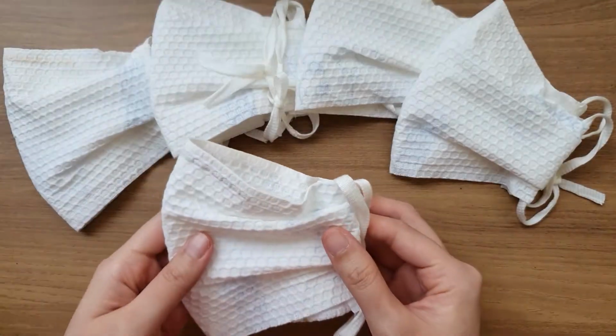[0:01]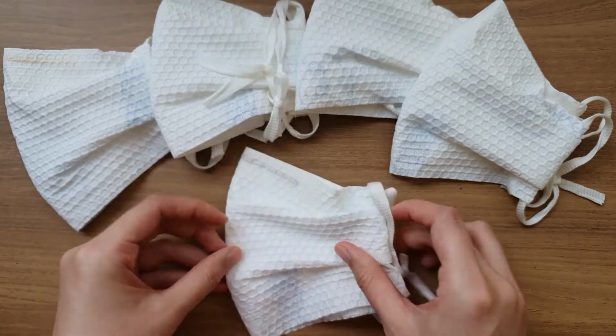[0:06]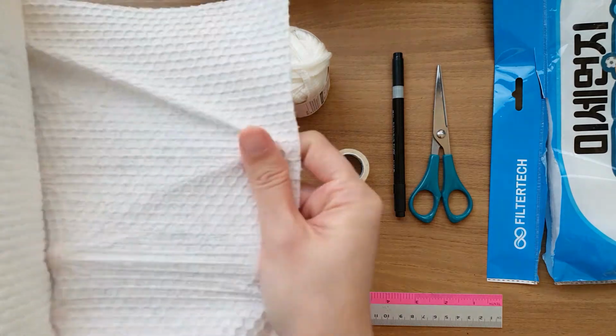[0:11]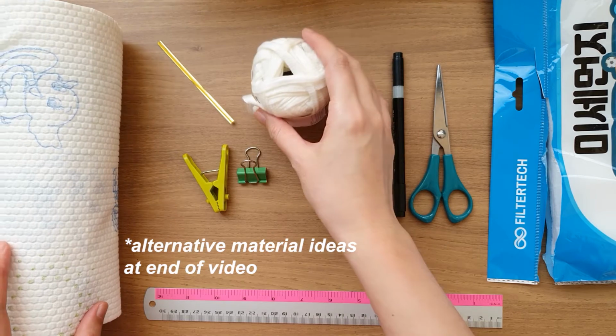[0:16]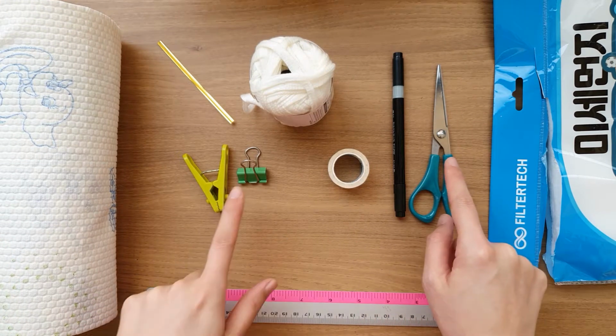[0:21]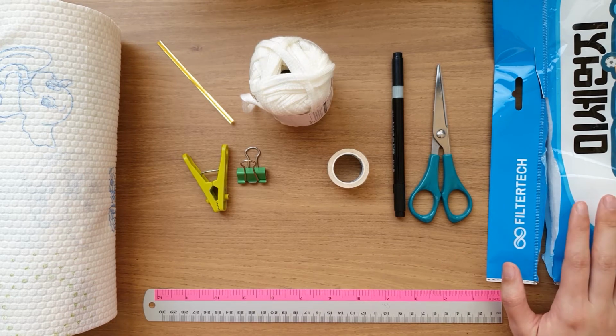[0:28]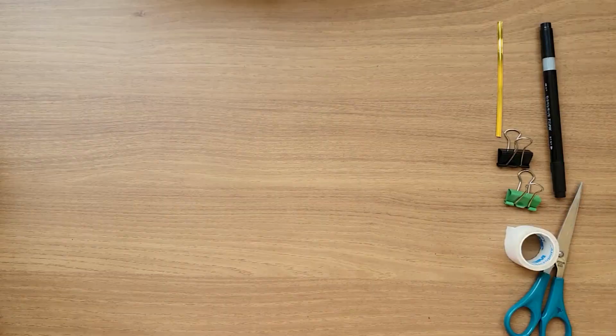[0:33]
This is the easiest DIY disposable mask you can make with basic household items. You will need a durable washable paper towel, twist tie, t-shirt string, medical tape, pen or pencil, scissors, binder clips, a ruler, and your filter. If you can't get a HEPA or HVAC filter, you can still make this mask and it'll provide a layer of protection. First, take one sheet of your paper towel.
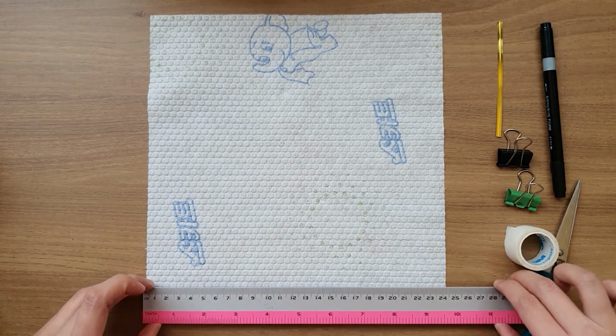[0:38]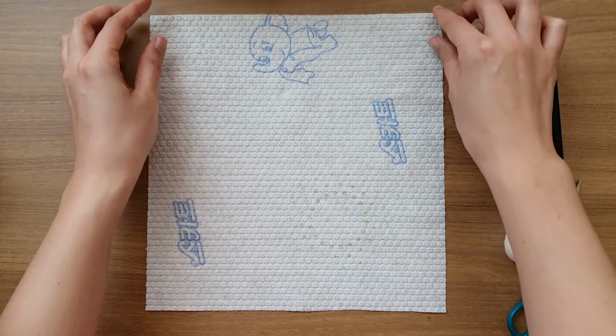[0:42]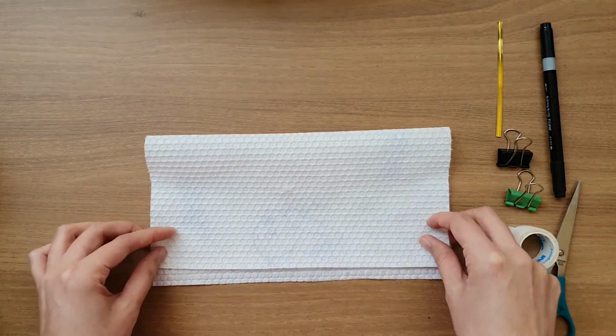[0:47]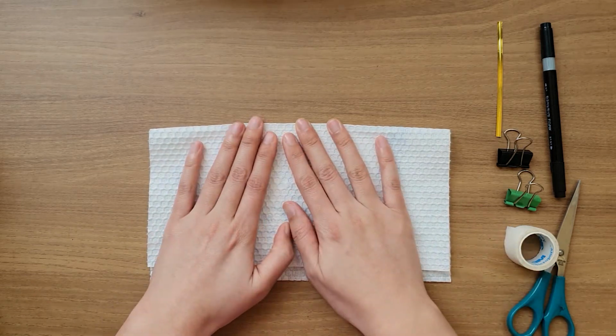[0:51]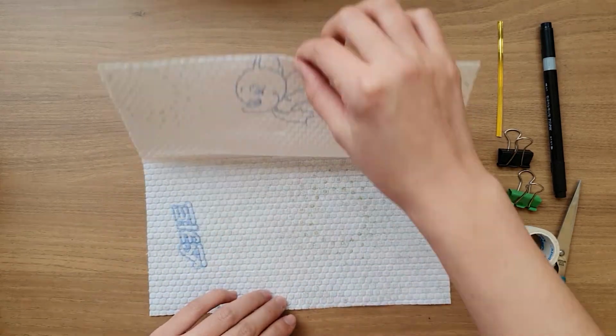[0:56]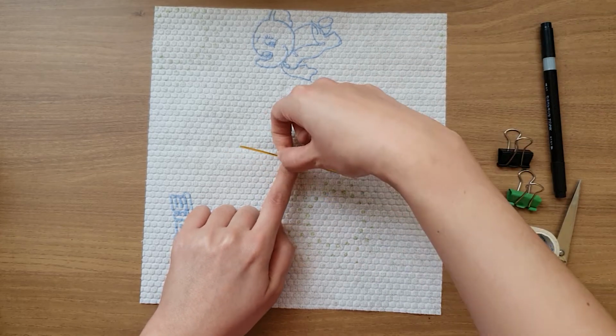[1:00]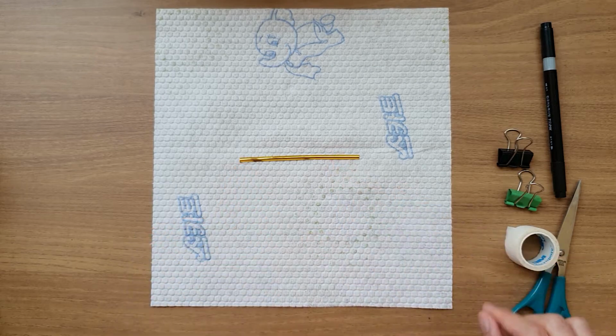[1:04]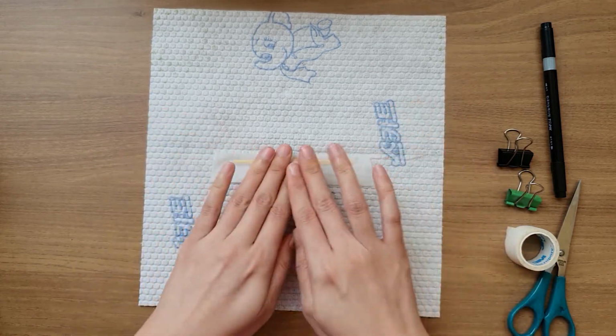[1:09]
Mine measures a little under 10 inches or 24 centimeters. Fold it almost in half, leaving about a centimeter or a half an inch margin, and crease it. Unfold the paper towel, find your middle mark, and place your twist tie right under the middle line. Take your medical tape and secure the twist tie.
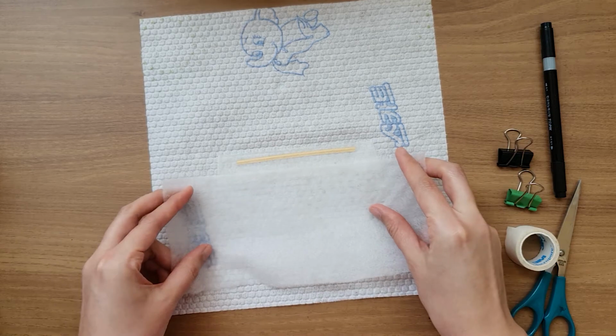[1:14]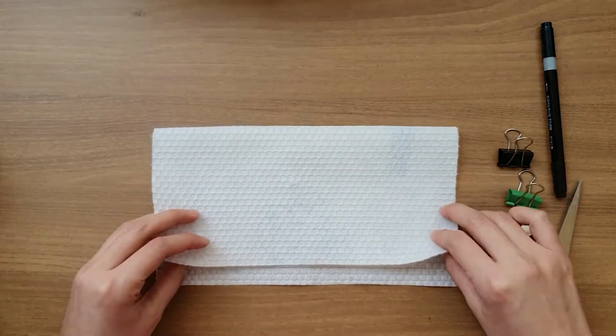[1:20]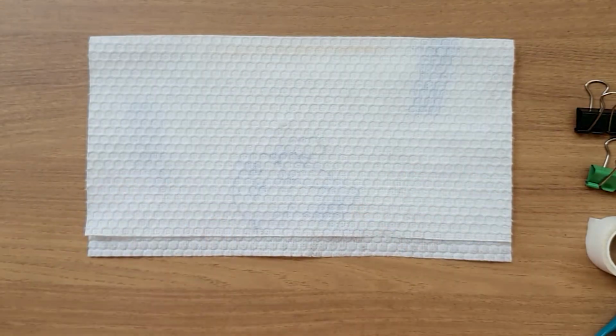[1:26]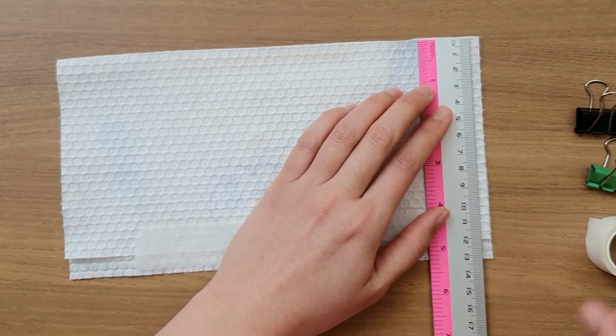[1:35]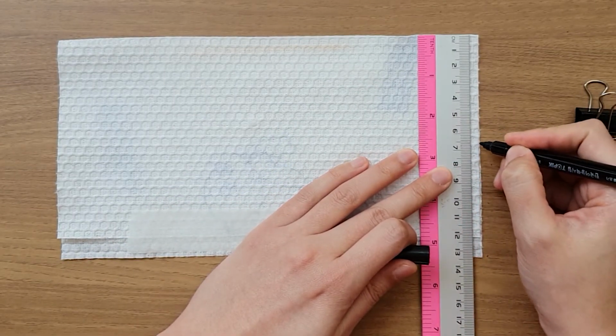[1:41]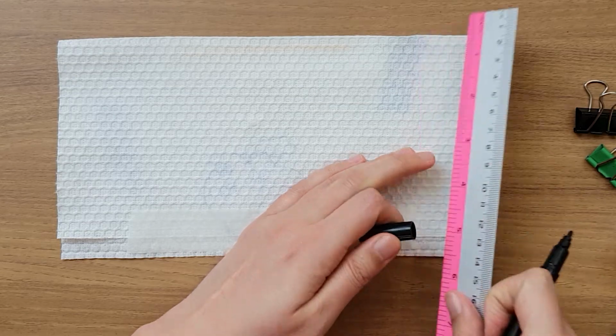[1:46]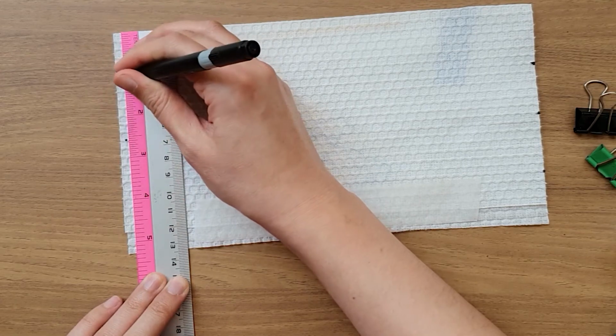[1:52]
Take your filter cut to size and place it in the middle. Fold the top back down. And take your medical tape and tape down the end. Next, you can use a ruler or eyeball a halfway mark and then quarter, and do the same on the other side. Mark halfway and quarters.
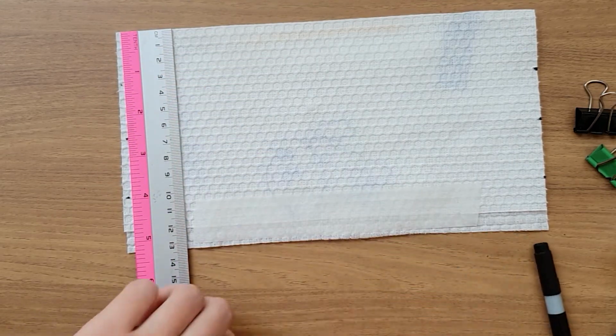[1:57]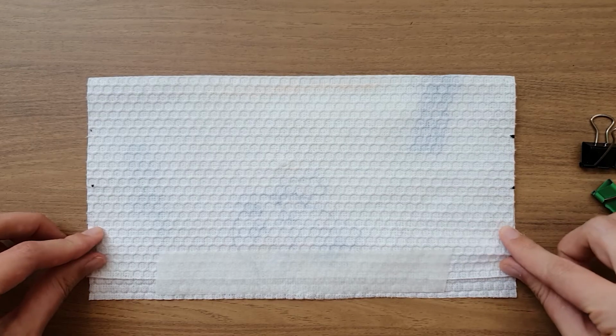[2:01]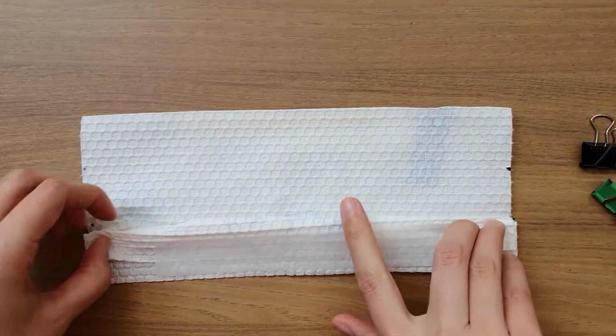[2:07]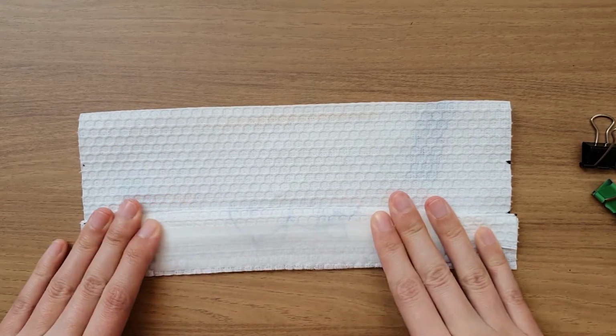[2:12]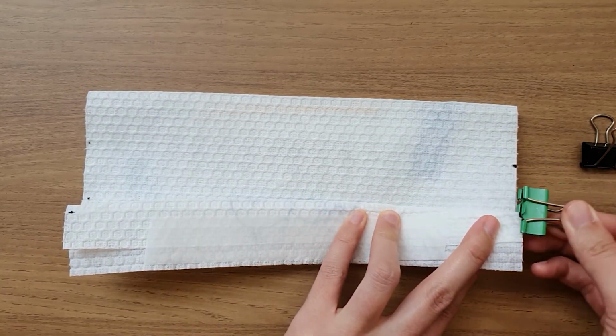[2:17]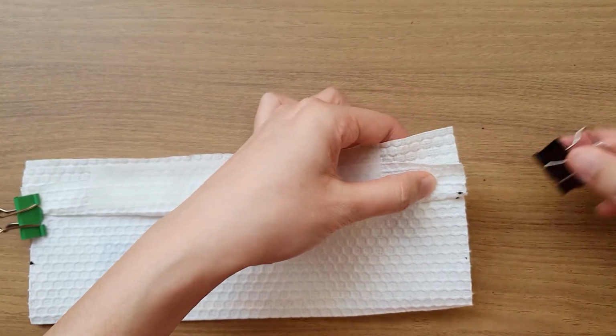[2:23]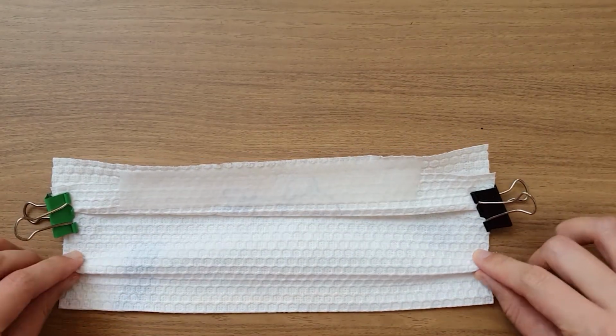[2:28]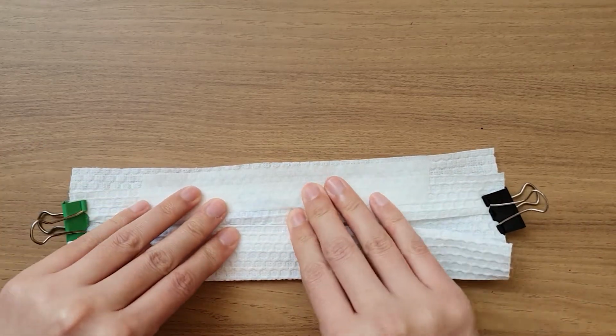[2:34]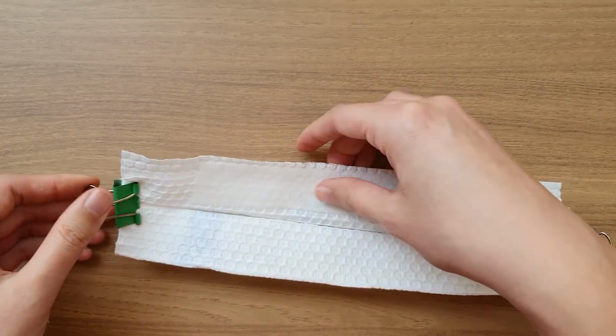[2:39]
Pinch the bottom quarter and fold it up to the middle mark. Crease that fold and secure it with binder clips. Secure the other side. Again, pinch the bottom quarter mark up to the middle line and crease the fold. And secure the ends with binder clips again.
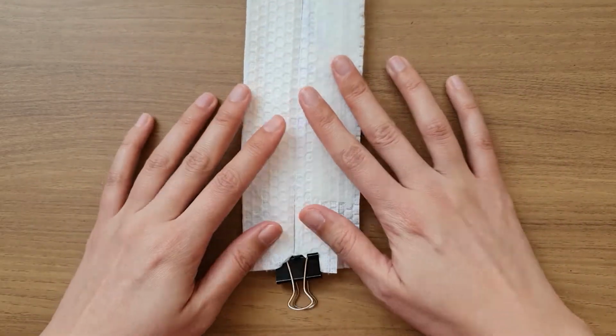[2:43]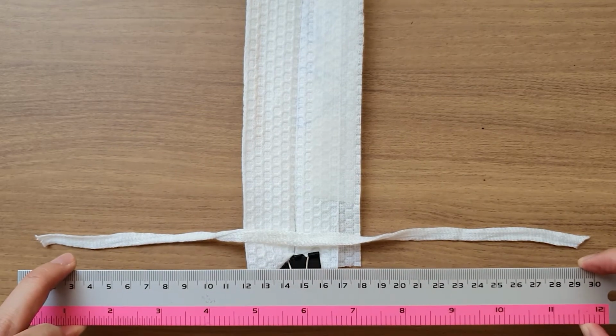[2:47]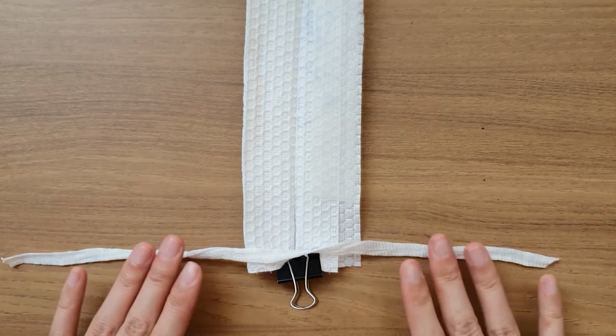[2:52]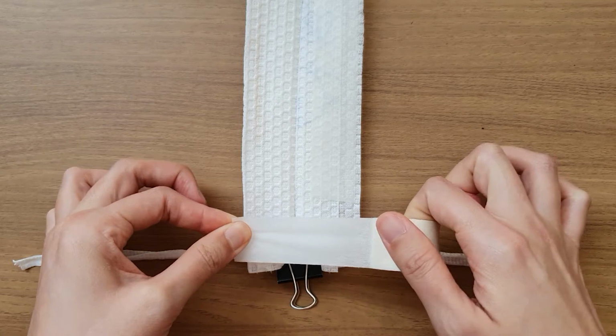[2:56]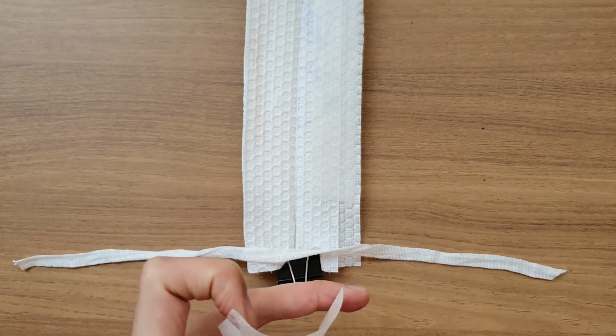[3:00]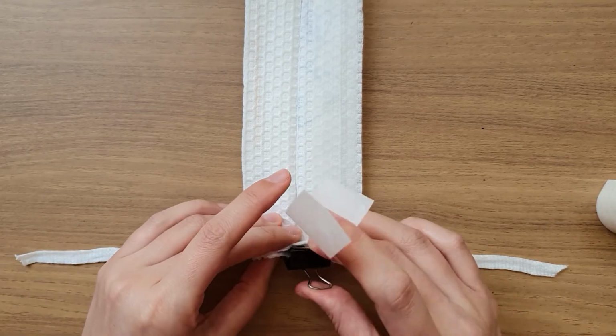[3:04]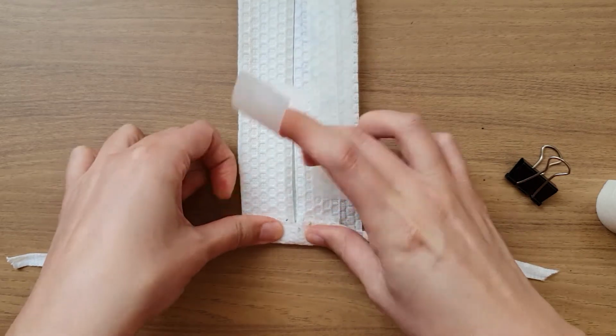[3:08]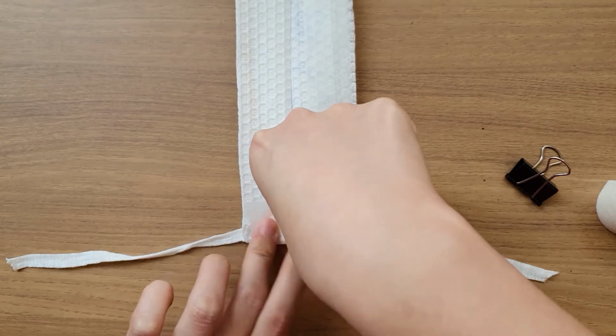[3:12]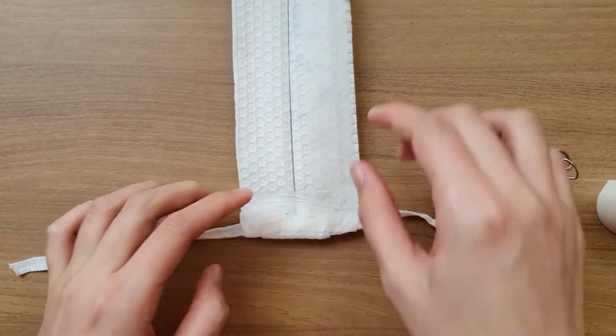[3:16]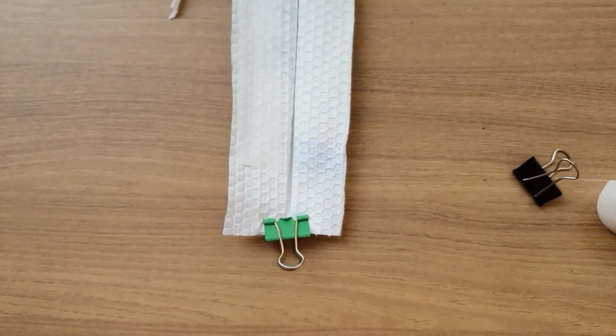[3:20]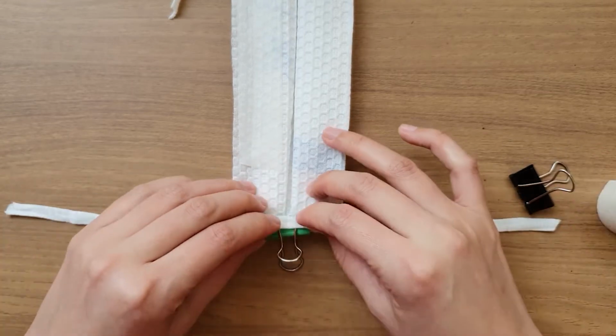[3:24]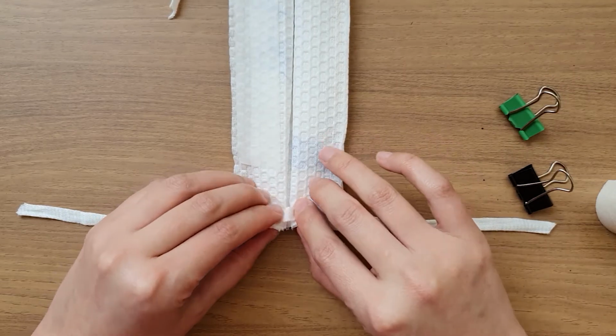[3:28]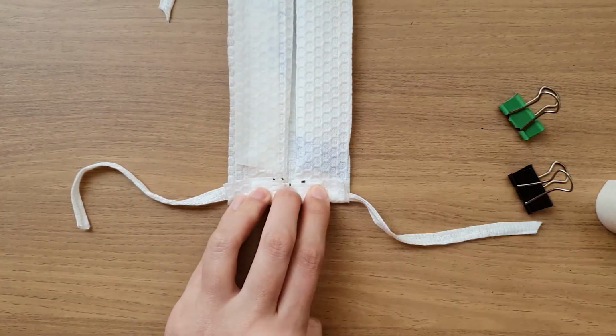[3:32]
Next, you're going to take your string. I've cut mine to about a foot or 30 centimeters long. Place it in the middle. Take your tape and cut it to the height of the mask. Undo the binder clip. Fold over the end, over the string, and secure it with your tape. Do the same on the other side. Place your string on the end, fold over the end of the mask, and secure it with tape.
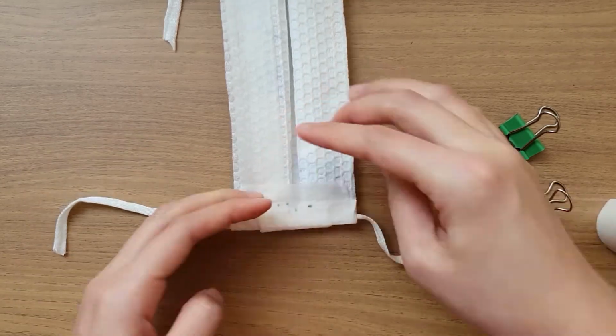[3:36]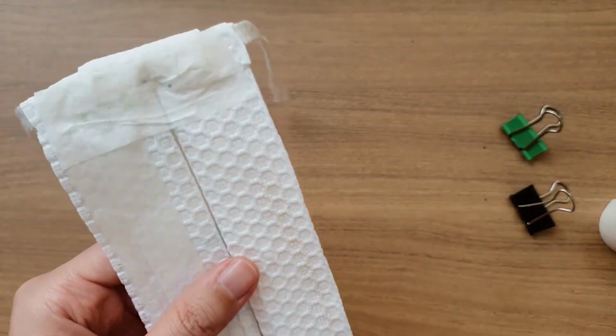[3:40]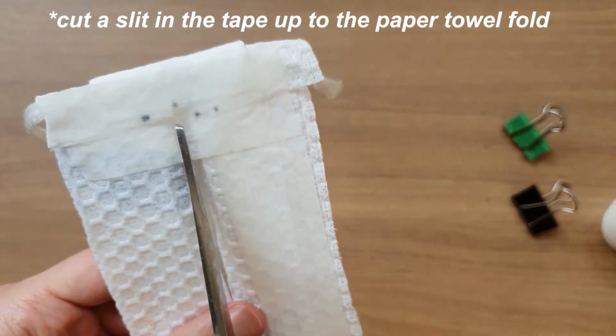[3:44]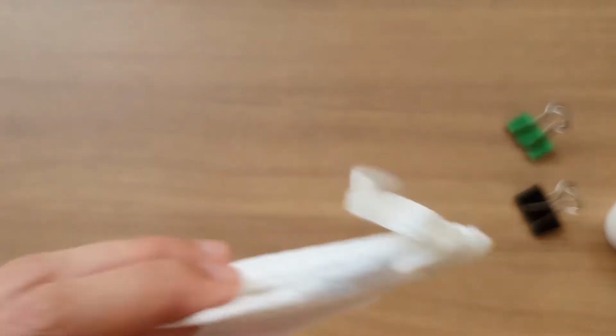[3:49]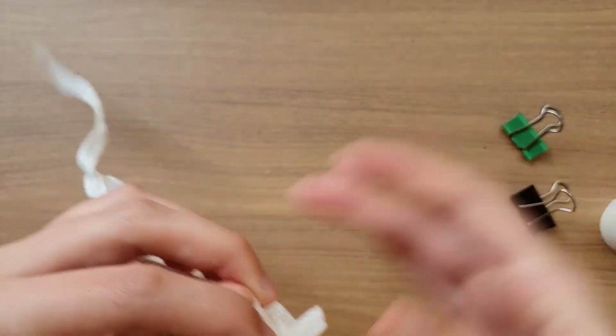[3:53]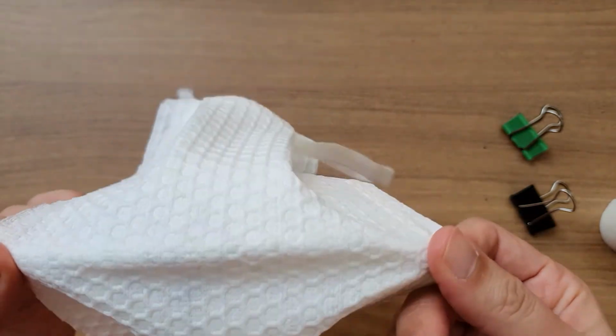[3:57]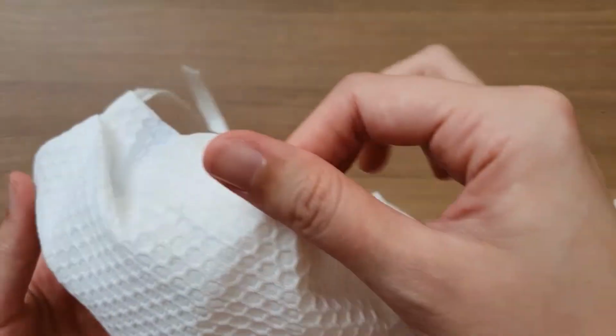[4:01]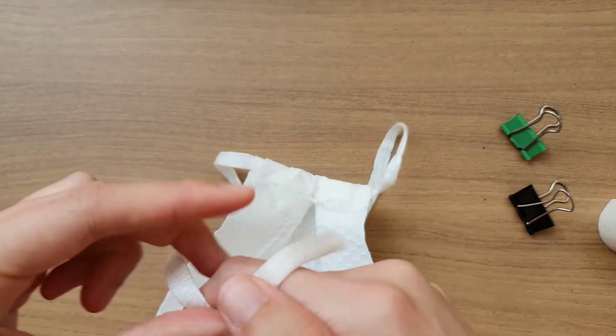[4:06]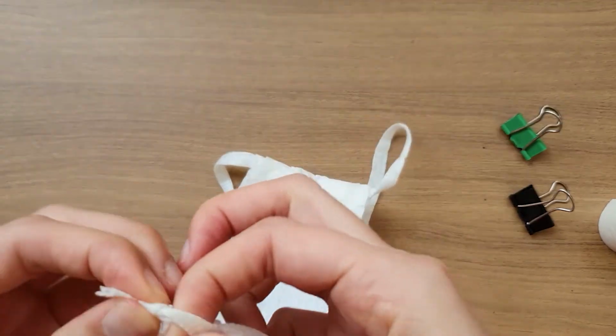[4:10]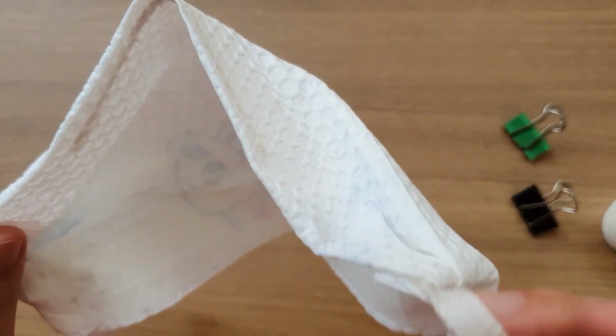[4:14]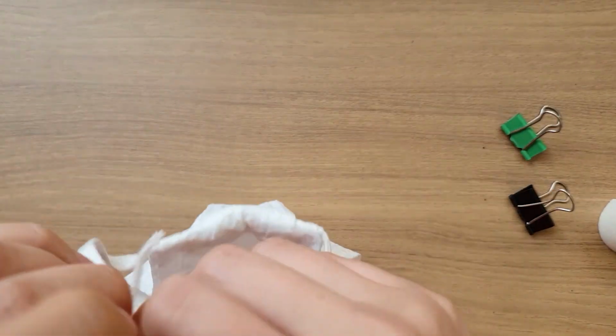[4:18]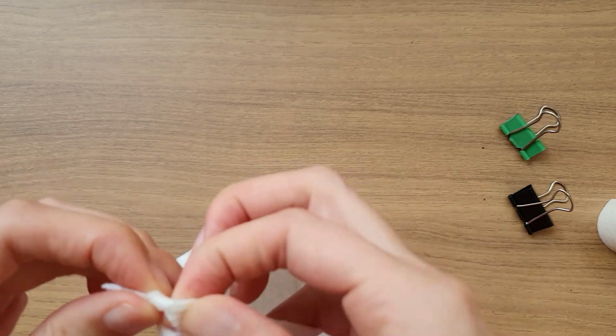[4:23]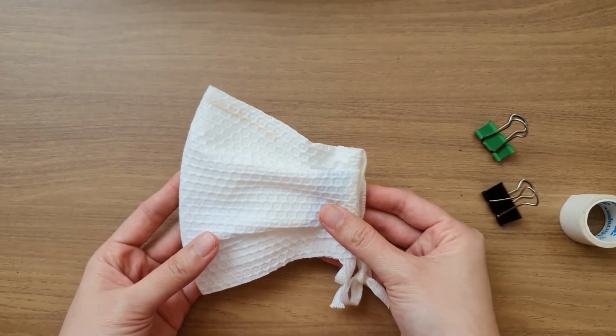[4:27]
Take your scissors and cut a little slit on the ends of the mask so the mask can open more fully. Now fold your mask in half and then open it up to give it structure and shape. Tie the ends of the strings on one end of the mask, and then try it on over your face over one ear to see how tight you should tie the other end. And there it is, your DIY easy disposable mask.
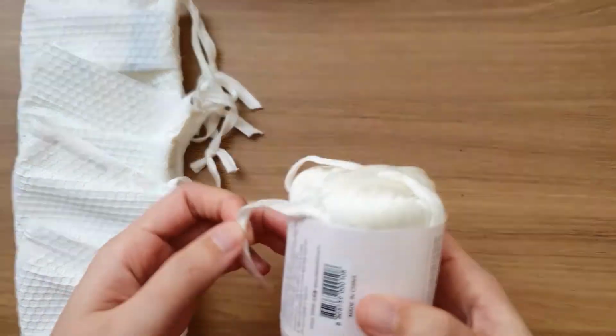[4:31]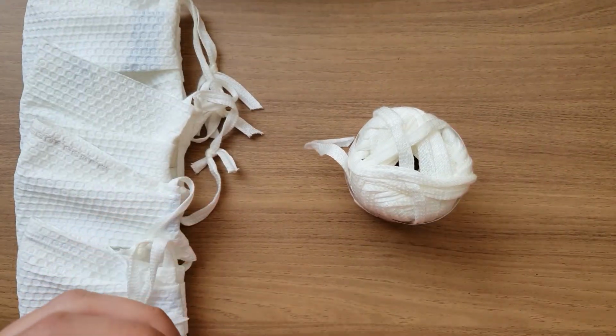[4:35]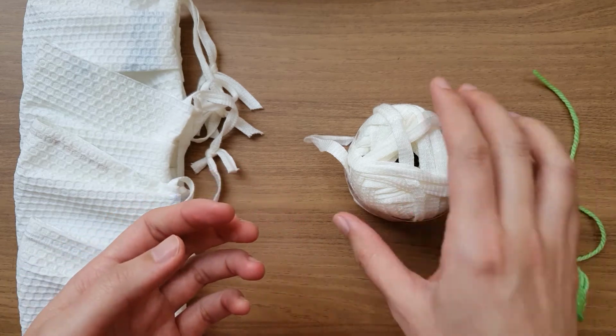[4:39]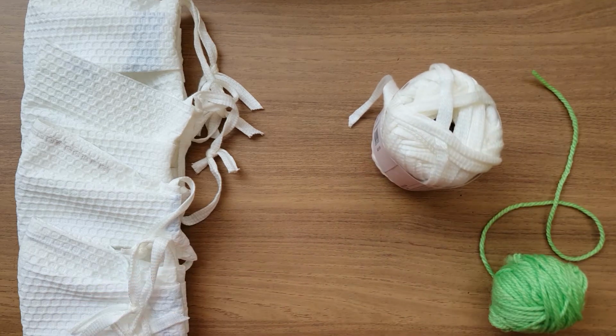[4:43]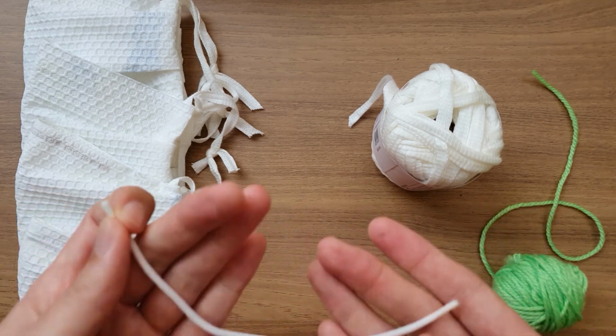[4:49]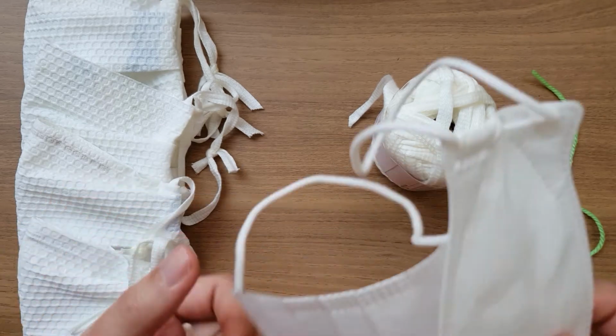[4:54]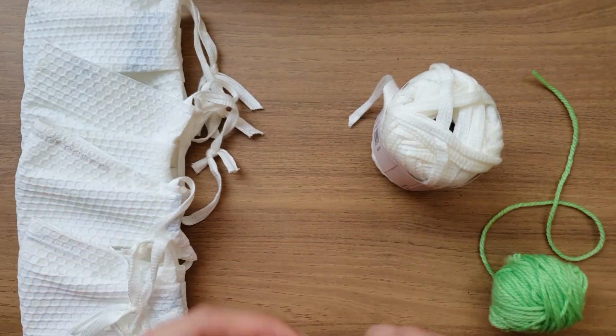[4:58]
For alternatives, for example, if you don't have t-shirt yarn or string, or some kind of soft yarn, you can also cut up the ends of an old t-shirt to make a soft ear loop, or you can use your old nylons, or if you're going to use elastic, make sure it's a really soft and flexible elastic like the ones used in surgical masks, because any thick elastic will really hurt your ears after a while.
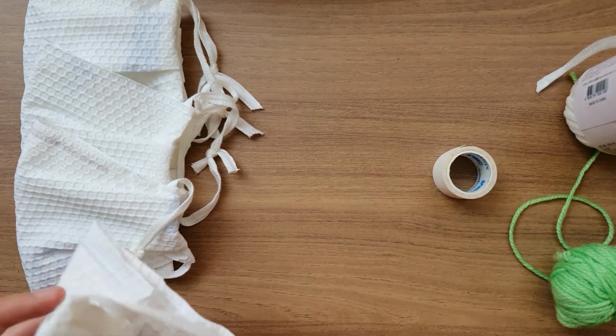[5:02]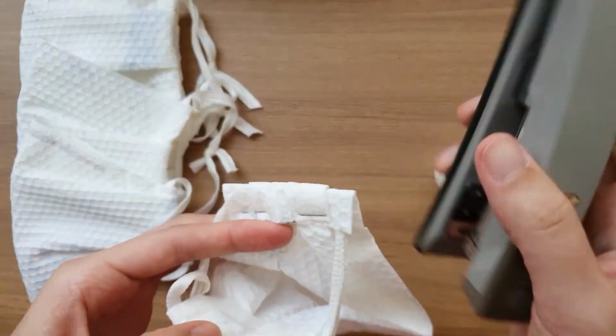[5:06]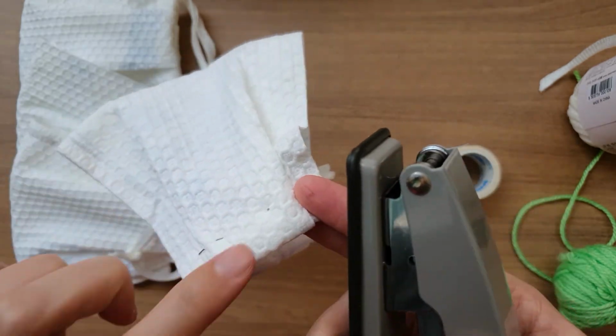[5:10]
Also, if you don't have medical tape, in a pinch, you can use a stapler. Just make sure to staple the top to the inside of the mask so that the ends are on the outside and they don't scratch your face.